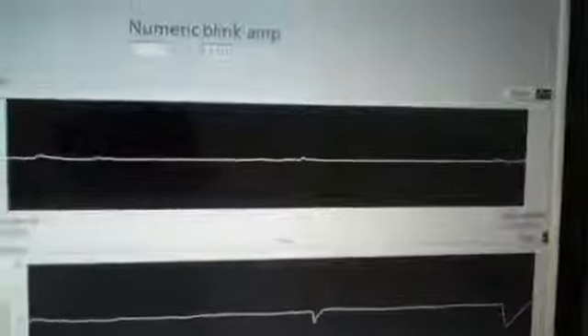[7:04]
This current project, which we have submitted to NI Yantra, titled Development of EOG based assist devices, is currently mentored by Mr. Chennai Mishra from NI. We had already shared the videos which depict the initial work done by us for the past 2 months. This video demonstration deals with the work done after the videos shared initially, and it will explain the modules completed as mentioned in our proposal.
In the outset, this current video demonstration will involve 2 modules to be explained, that is, the modules which were completed for the current month. In the first VI, the subject will be able to control the keyboard cursor for folder navigation and selection. And in the second VI, which involves the same concept, the person will be able to move the mouse pointer as per his gaze, and he can perform the equivalent action of click by blinking.
So what we did was, we integrated everything. We integrated the existing on-screen keyboard in Windows 7 with the VI, and the person will be able to select the characters in the on-screen keyboard by navigating in the respective direction and blinking. Once the entire message has been typed, once he presses the enter key, the typed message will be serially transmitted to an interfaced GSM modem, and hence the message gets delivered to the recipient. The recipient's mobile number will also be programmed, or the subject will also be able to select the recipient's mobile number. So we will be showing this demonstration now.
In this VI demonstration, the VI shown is used for keyboard cursor movements as per the directional eye gaze of the subject. The 2-channel EOG data is acquired initially through a DAQ, and the 2-channel data is split up using a signal splitter and fed to the respective peak detectors. Peak detectors look for peaks or valleys and produce an output pulse. If a peak is found in either the positive or negative axis direction, it classifies the right, left, or up and down signal.
Once a respective event, say right, has been triggered, it will trigger a case structure which has the equivalent action, a key call library function, DLL call libraries, which has been sent a parameter of 39. 39 is used for the right action, and we send this parameter to the DLL function, so that whenever this case structure gets triggered, if the person looks in the right direction, the equivalent action of the right arrow key press is done. Similarly, we have case structures for left, right, up and down. We have 4 case structures, and we have a separate case structure for the enter pulse, for which we send the parameter value 13 to perform the enter action.
Now, this section is used to classify the up and the blink signal. We know that the blink signal is a short negative going pulse, whereas an up signal is a low amplitude negative going pulse. Whenever a person blinks, he will also get an up signal. So in order to extract the blink component from the up signal, we employ another threshold value to detect the blink amplitude, and we incorporate an AND gate, so that when a person blinks, a 1-1 occurs for both up and blink, and the output is 1. If it is 1, we trigger the enter DLL function.
If the person looks in the up direction, which is a low amplitude pulse, it won't trigger the blink signal, since the blink threshold is far beyond the up signal threshold. Hence, it will be a 1-0 combination and the output of the AND gate will be 0, which means the entire DLL function doesn't get triggered. So for the up signal, only the up arrow key is pressed, and if the person blinks, only a blink action is performed, and no up action. So this is all with regard to the keyboard cursor movements by the directional eye gaze of the subject. Now let's move on to the explanation of the VI for mouse cursor movements.
Now let's move on to the first demonstration. In this demonstration, the subject will be able to control the keyboard cursor by gazing in the respective direction, and he will be selecting the folder by blinking.
The subject is Gopalakrishnan, and there are 5 electrodes placed around his eye. The first electrode is for the vertical component. One is set above the eyebrow and the other below the eye, and for the horizontal component, electrodes are placed on the left and right sides, and the reference electrode is also placed. Now let's move on to the VI.
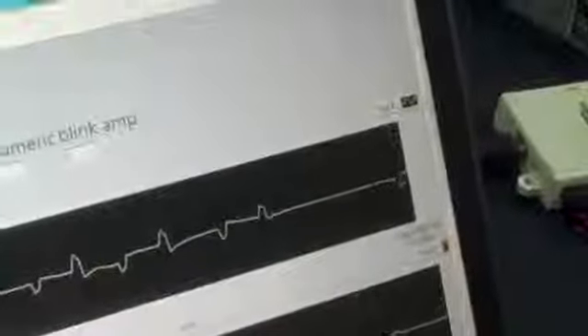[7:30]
Currently you can see the signals getting acquired. The top one is for left and right, and the bottom one is for up and down signals. I'll give directions to the patient, and he will be able to see the signal variations. Left, right, left, right, left, right, left, right. Now you can see the horizontal component variations. Further, we will show the vertical component variation now.
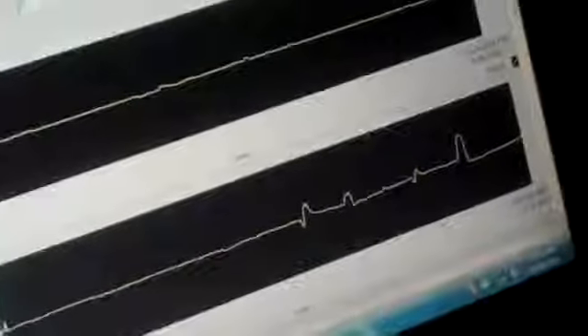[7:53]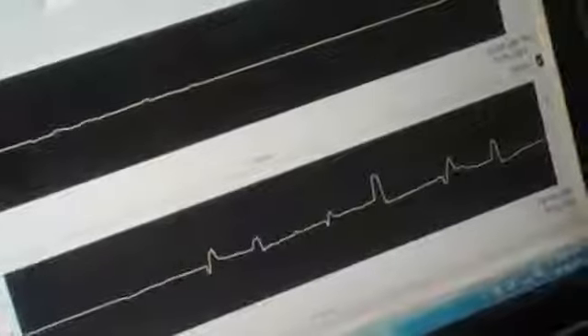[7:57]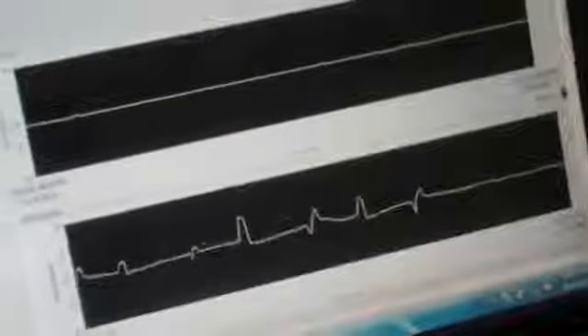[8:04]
Up, down, up, down, up, down, up. So, these signals are acquired and converted into control pulses, and when the person blinks, he will be able to select the folder. We'll show the blink component. The blink component will be shown in the folder selection.
Okay, now the VI is running in the background, and we have the folder selection right over here. Right, left, left, right, down, down, left, blink. As you can see, the person has blinked and the folder got opened. Blink again. Again, the folder has opened.
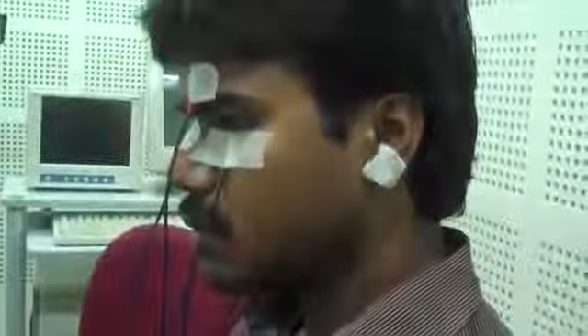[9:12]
Right, right. Now the person is selecting the folders, interacting with the folders by giving his gaze in the respective direction. Down, down, down. No folder down there. Up, up, up, up, up, up, up, up, up, up. Left, left, left. No folder on the left there. Up, left, left, left, left, left, left, blink, blink. So the person has selected the folder now.
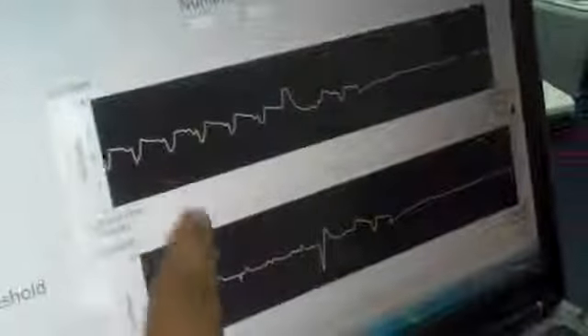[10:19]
We will show the VI that's running behind. As you can see, this was the left and right signal, and this was the up and down signal. I will give directions to the subject, and those are the amplifiers that have been used. We use an NI DAQ to acquire the signal. Left, you can see the left pulse. Right, you can see the right pulse. And for down, you can see the down pulse.
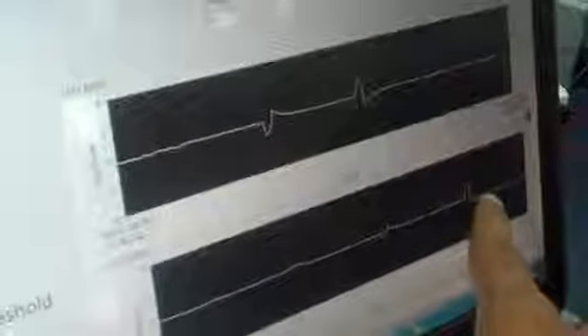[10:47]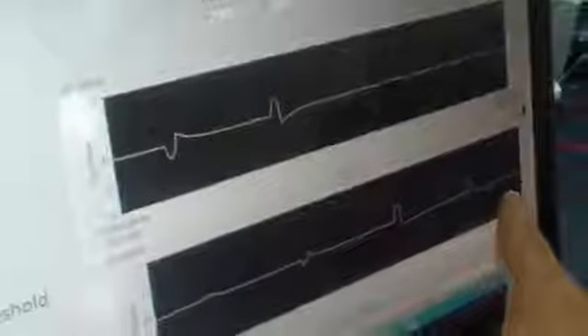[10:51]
And for up, sorry, he has done down. Up. Yes, you can see the up, negative going pulse. We have set suitable thresholds here, and also the blink threshold. Those LEDs indicate up, down, right or left. So again we'll move on to the folder, and you can see the variation.
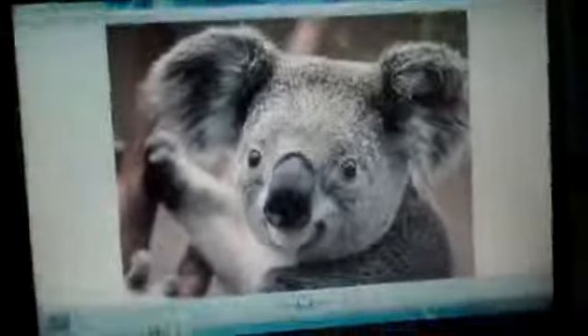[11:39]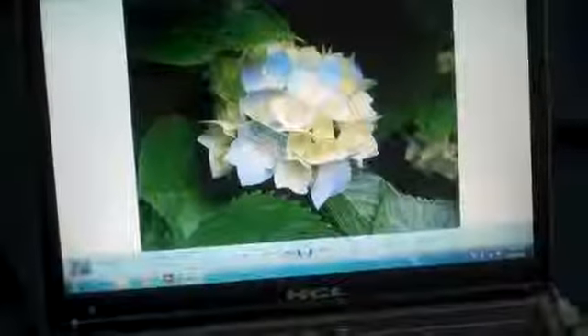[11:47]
You can see the picture folder. It can be better visualized for picture folders. So I'm placing this. Okay, left, blink. So you can see the picture got opened. Left, left, blink again. Right, good, right, good, left, good, blink. As you can see, the person has selected this folder, picture.
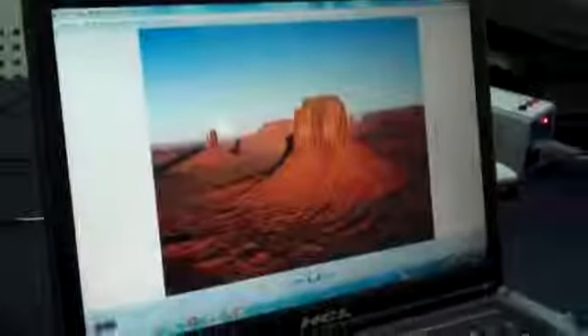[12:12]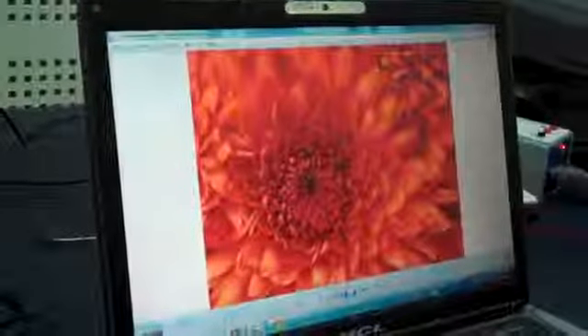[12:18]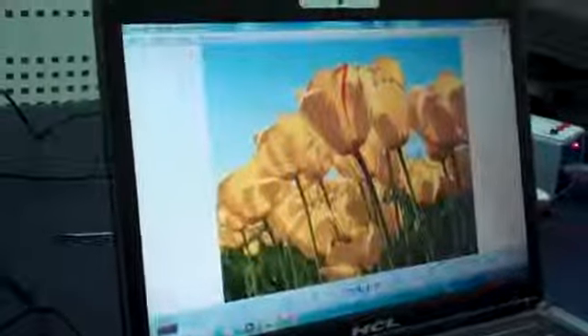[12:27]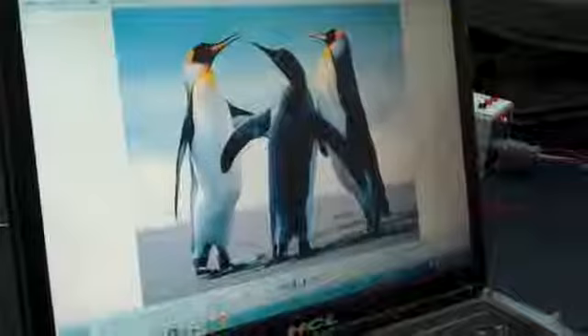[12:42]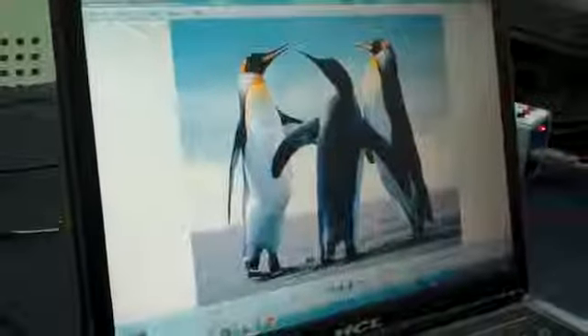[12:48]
Again he will be able to navigate through the screens. Right, right, right, left, good, left, good, right, good, right, good, left, left. No left pictures here. There are no left pictures there. So again the person is directed towards his right. Right. Good. Left.
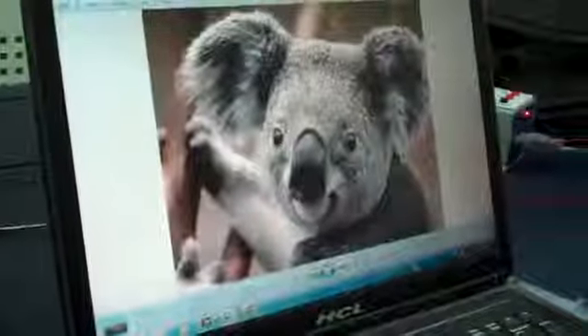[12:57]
Good. So the VI now shown is the mouse cursor control VI, which has the same structure as that of the keyboard VI, but there's a small difference. Instead of using the keyboard DLL libraries, we use the mouse DLL libraries, and we have 4 DLLs for performing the left, right, up, down movement of the mouse pointer. These 4 DLLs take a parameter, the value, that is the amount by which the mouse pointer should move, specified to each DLL function. Finally, you also have a click DLL, which performs the right click action.
Whenever it gets triggered by the blink action of the subject, the rest of the functioning of the VI is exactly similar to that of the keyboard cursor movements. We have peak detectors employed for both up and down, and an AND gate to distinguish between the up pulse and the blink pulse. So whenever the person looks in the respective direction, you can have the movements in the